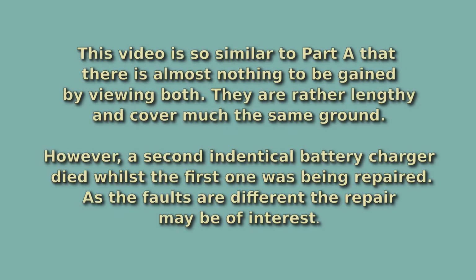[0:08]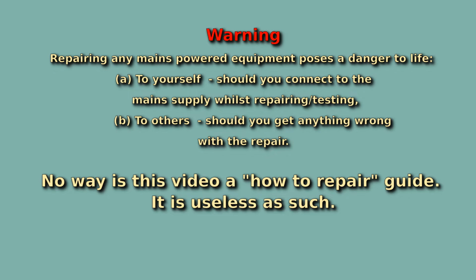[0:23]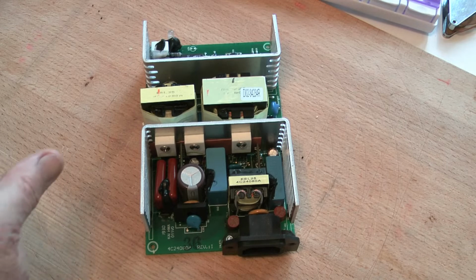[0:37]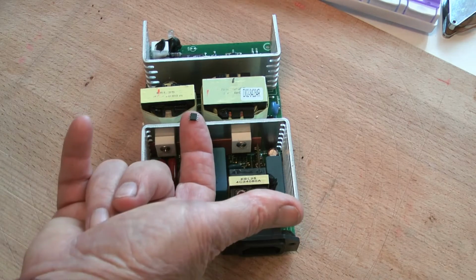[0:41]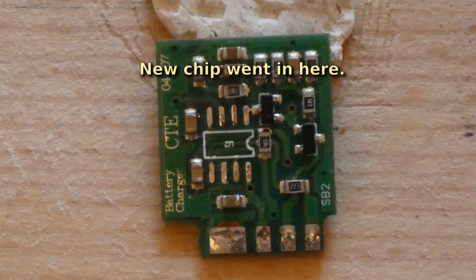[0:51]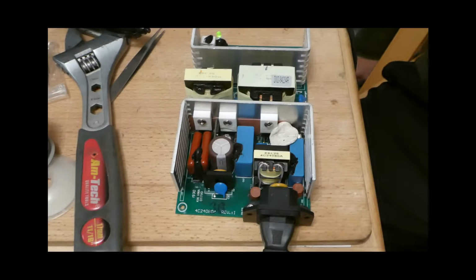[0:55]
Firstly, an apology, but, and there is a big but to all of this, when the chip came in, I couldn't resist it, couldn't wait, changed it out and removed it from the board, as you can see in this picture. Then I switched it on and tried it, and as you can see, the little green light flashed.
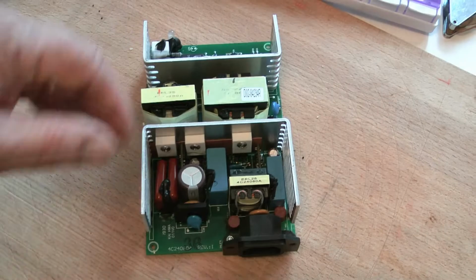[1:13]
And now my first thought was hurrah, fixed it, but the green light seemed to be flashing slightly faster than what I remember, although my memory is pretty vague on that side of the subject. Luckily, I've got another one.
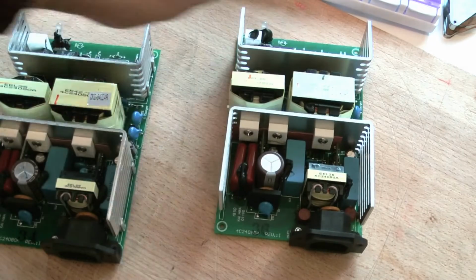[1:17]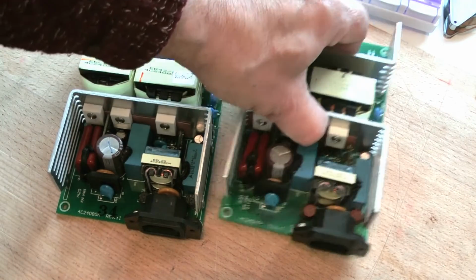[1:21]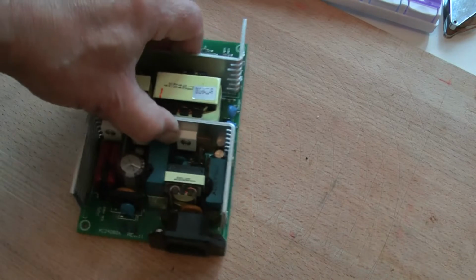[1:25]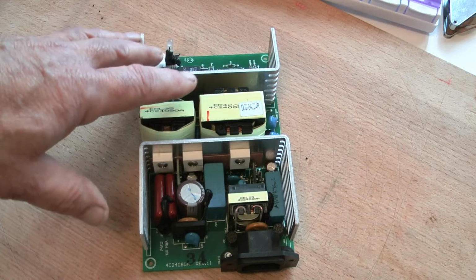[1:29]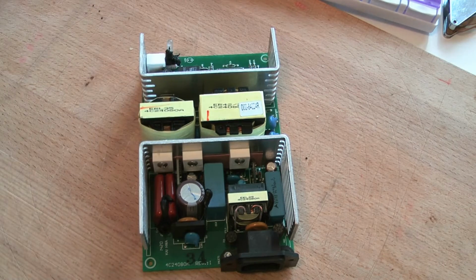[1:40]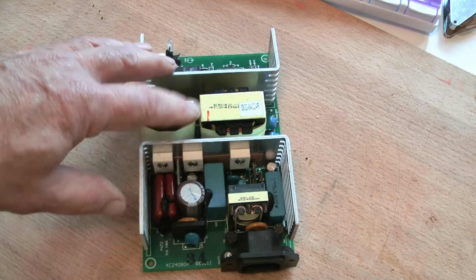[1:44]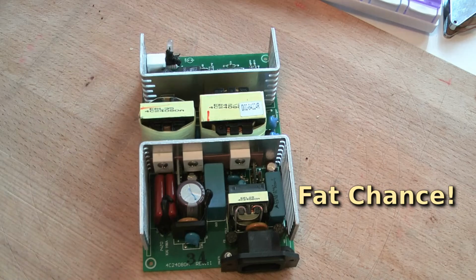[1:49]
Let's take away the one that's been repaired and talk about this one. I powered this unit up, the green light started flashing at the same rate as the other one. I thought, great, job over. Blinked my eye about 10 seconds later and the green light stopped flashing. We now have a fault on this power unit, and I'm going to take you through finding the fault on this one. I won't speak too much, I'll just get on with the job.
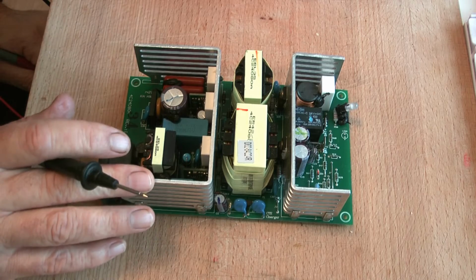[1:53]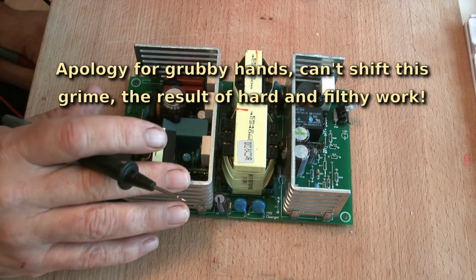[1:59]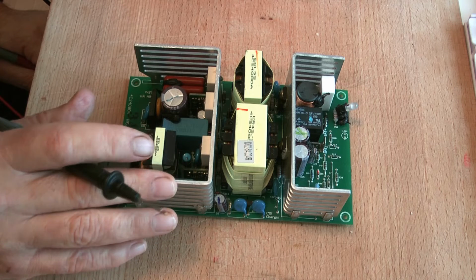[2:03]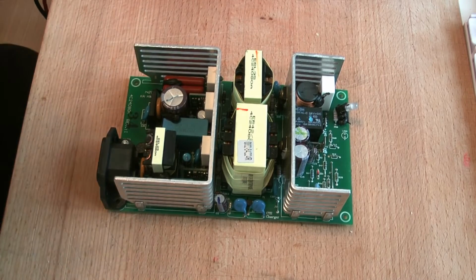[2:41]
I bought this unit second hand and it worked just fine, and primarily it's for our guest when she arrives, save her bringing her power charger with her for her electric wheelchair. And secondly, I bought it because it was a very reasonable price. And thirdly, I bought it because it allowed me to check out the component values for repairing the other power unit. And we also have a sort of third unit which she has at home. So she's got a main unit at home and a spare one in case anything goes wrong. And now we've got one here for when she visits.
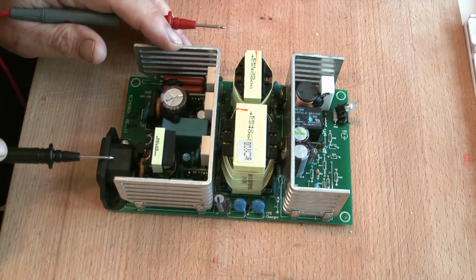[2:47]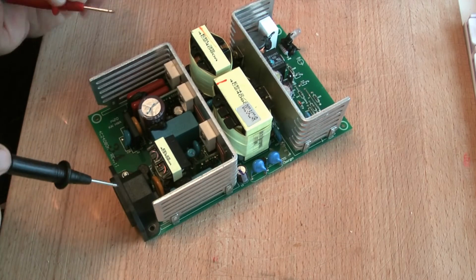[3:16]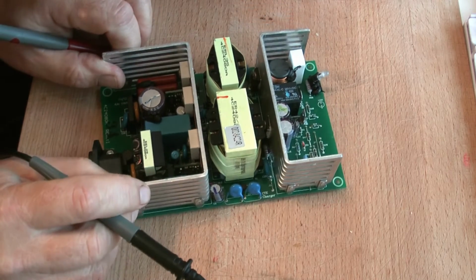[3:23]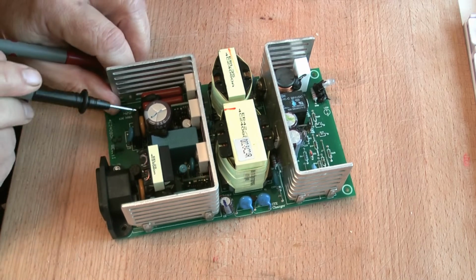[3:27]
Most power units break down into sort of the same format really. We've got mains input, either side of that we've got two fuses, one there, one there. There's a varistor there. A varistor is meant to take out high voltage spikes. There's the choke which goes either side, live and neutral. And before the choke though is normally a capacitor. This capacitor, you probably can't see it there. Let's turn it around so that you can see it. This capacitor here. And after the choke, it goes off to the bridge rectifier.
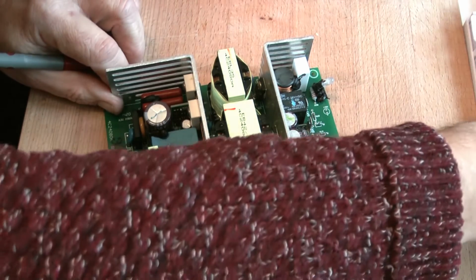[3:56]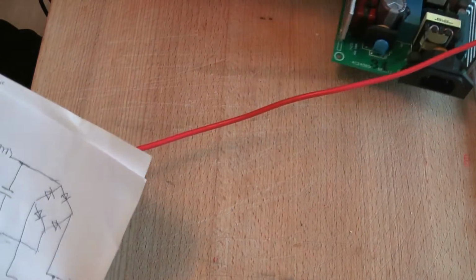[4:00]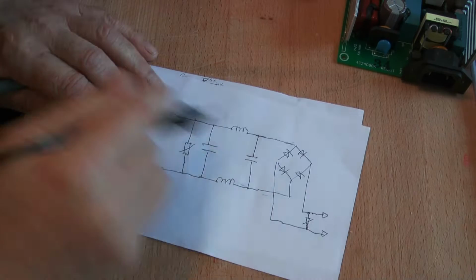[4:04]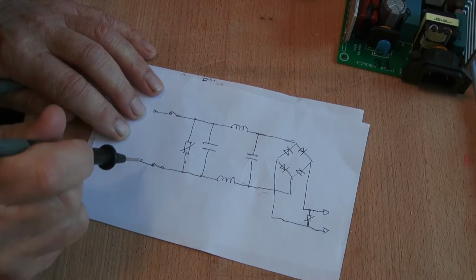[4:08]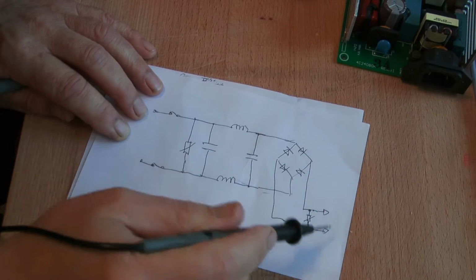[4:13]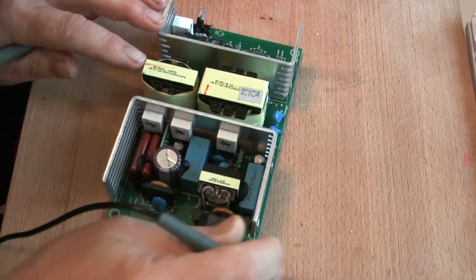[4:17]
And this bridge rectifier here, just in front of it, is a small ceramic capacitor, which I think is there to take out high frequency interference generated by the power unit. And behind that, on the rectified side, is another varistor stuck there. Now, let's see if we put the circuit in front of you. The circuit looks like this. To test this, all we need to do is just go to here or here and check here and here and see what we got. So without further ado, let's get on with it.
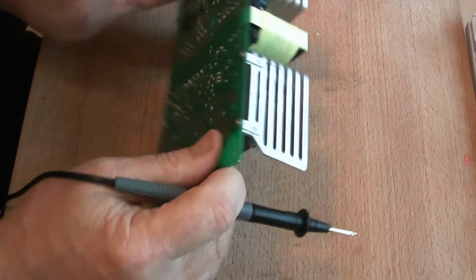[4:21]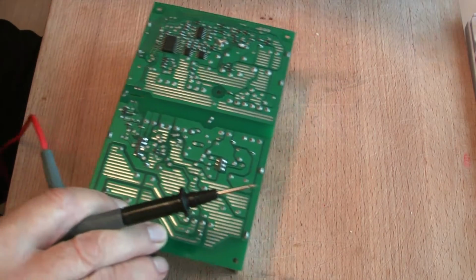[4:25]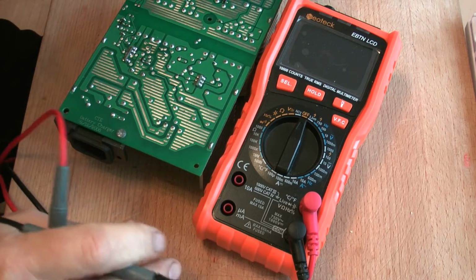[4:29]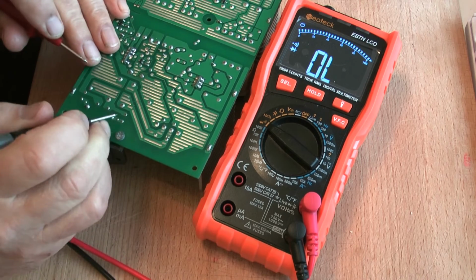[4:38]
I'll turn it over because it's easier for me. Switch my meter on if we can get it into a nice position. Diode mode. There's one side of the mains input, and over here are these two terminals of the bridge rectifier output, and on one of them it's open circuit, and the other one we have a diode drop. Now if I swap over to the other side, you should see that we've got the diode drop again, which indicates that all's well in that direction up to that point there.
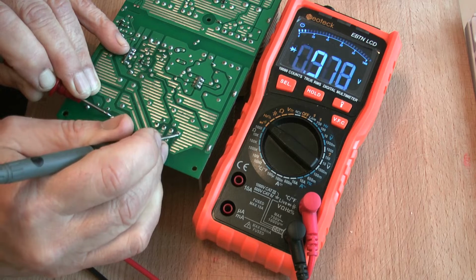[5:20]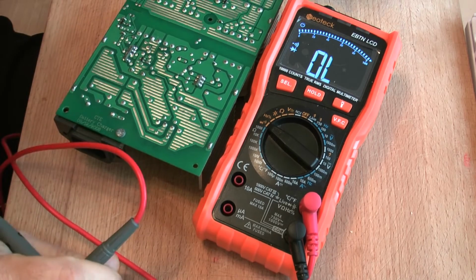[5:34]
Now swapping the polarity of our test probes over, I put plus on here, you will see that we now have an open circuit to that point there. Go over to the other terminal output of the bridge rectifier and get the voltage drop. Bring our test lead over to the other mains input and we get the voltage drop there. Nothing there. So basically speaking, we can forget about that bit of the circuit.
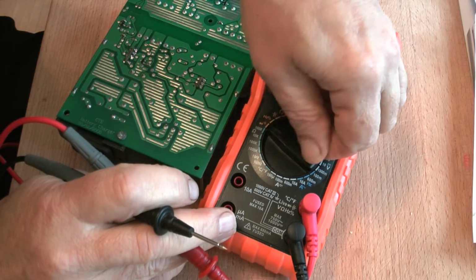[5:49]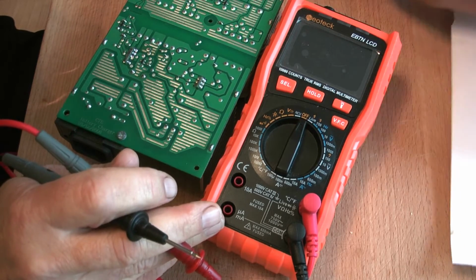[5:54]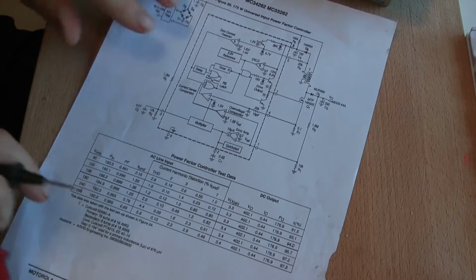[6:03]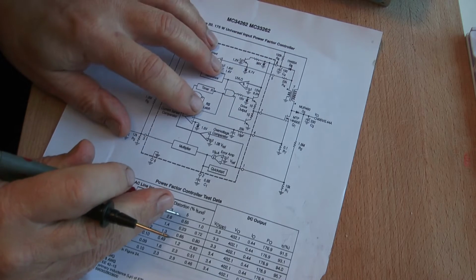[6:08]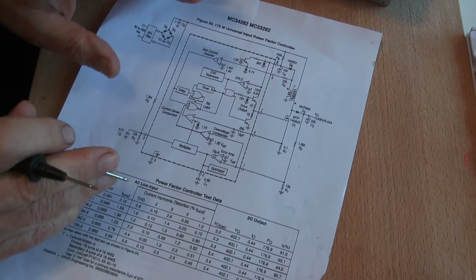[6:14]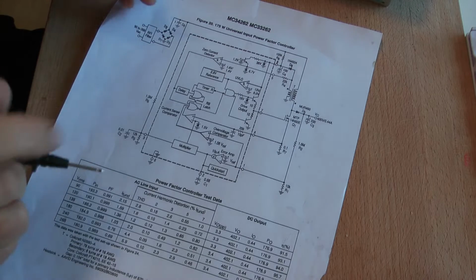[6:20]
Now, from here on it becomes difficult because we don't have a circuit diagram, but we do have a recommended circuit diagram I came across for the chip that I replaced in the other unit. And although this is a very simplified circuit, there are a few major points in here that are very similar to what we find on our power unit that's blown.
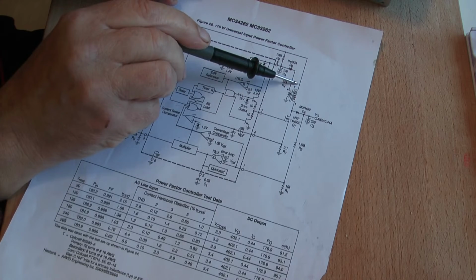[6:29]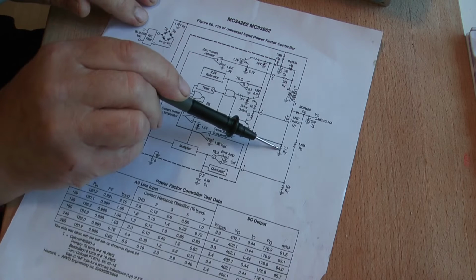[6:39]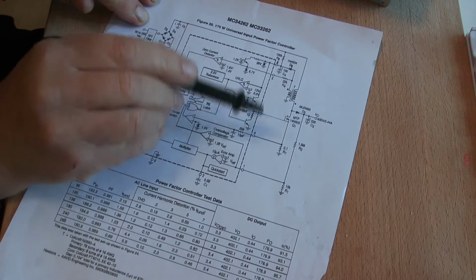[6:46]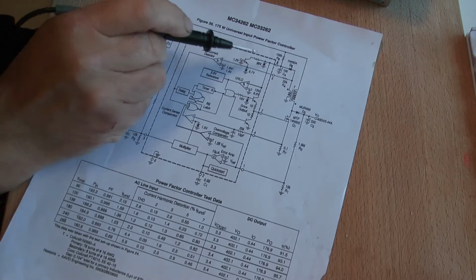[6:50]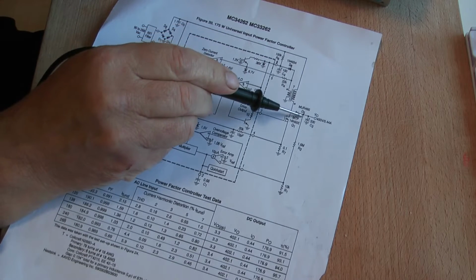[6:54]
And as you see, we've got this RF filter bridge rectifier circuit here, and it runs off to a transformer and a switching transistor, which is a MOSFET, and a 0.1 ohm current sensing resistor. Now, these three components are common on our power unit. And also this diode that runs off from where they take the power out. In fact, the diode's common, and the electrolytic capacitor performs a similar sort of configuration.
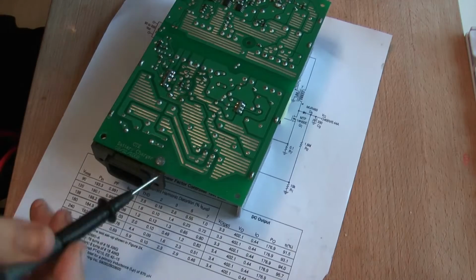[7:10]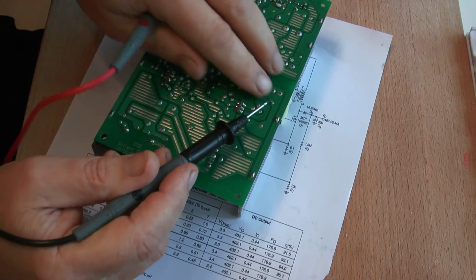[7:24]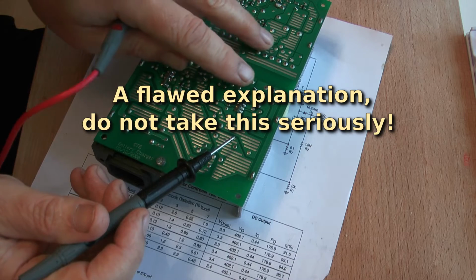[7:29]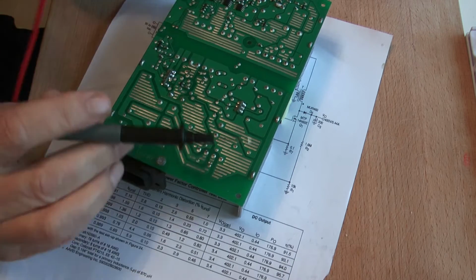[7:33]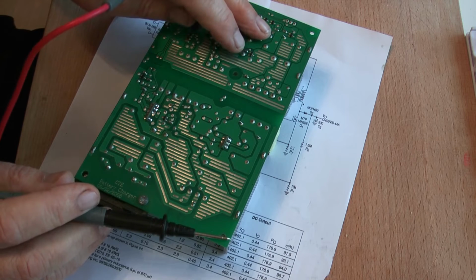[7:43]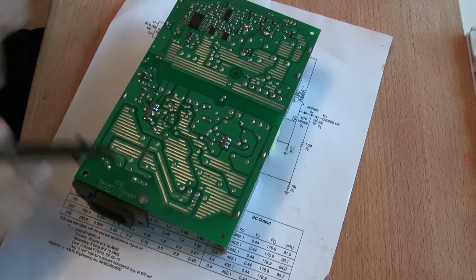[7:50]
Well, firstly, this is the transformer that we were talking about, across here, and this is where all the main power goes to the outputs that charge the battery. There is another transformer over this side, and this is used to derive the low voltages required to drive all the logic function, the integrated circuits here. So there's two functions. One's providing the 24 volts to the output, and the other one is providing the necessary voltages to drive these chips and transistors that decide upon which charging rate we're going to have.
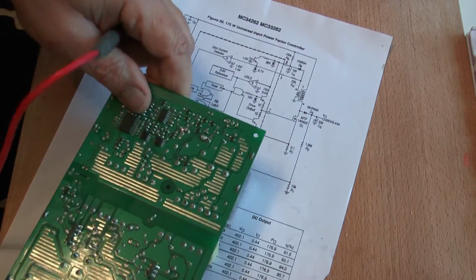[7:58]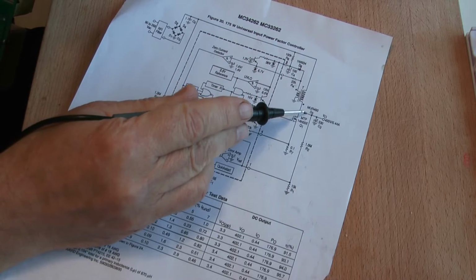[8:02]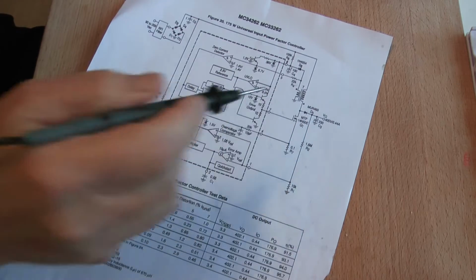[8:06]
So basically the circuit breaks up at this component here. So it's a good point to actually test across.
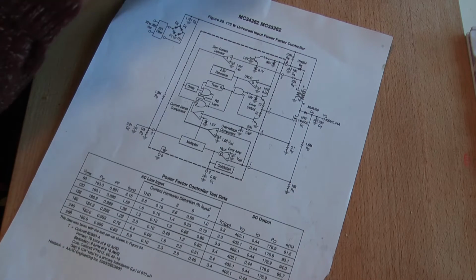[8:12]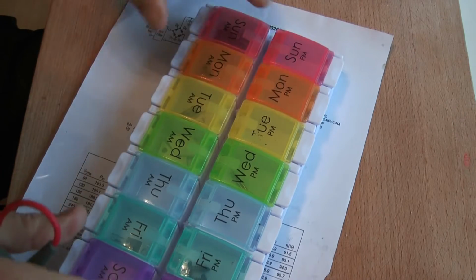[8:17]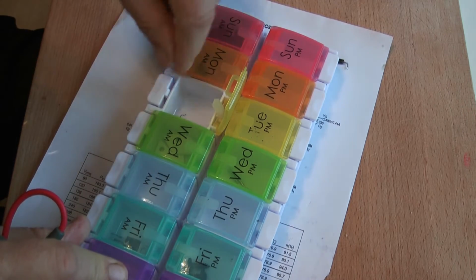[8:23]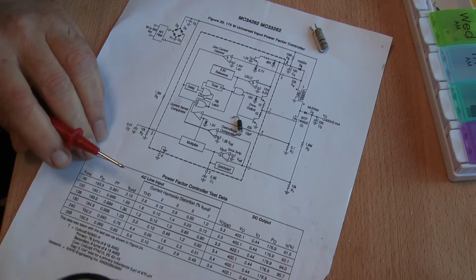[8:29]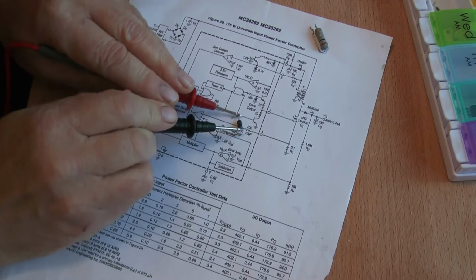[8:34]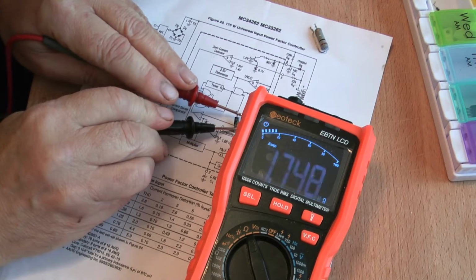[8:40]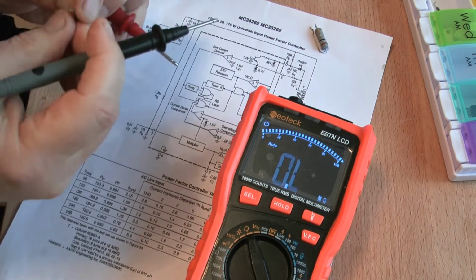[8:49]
Now, when we repaired the other unit, we had the, let's see if I can find a diode. I'll take these components out, some of them, not all of them, just these. This is the diode, and that was blown. Let me show you, put it on a resistance value. Let's see if we can see what's what. So it's 0.2 of an ohm. Not very much, is it? Or 0.1. And it's like a lump of wire.
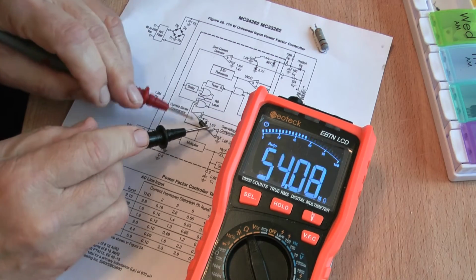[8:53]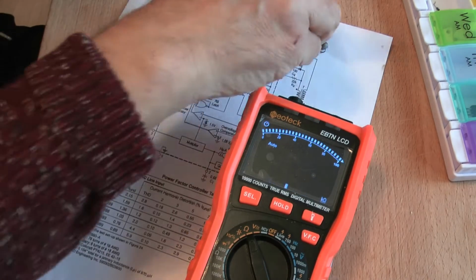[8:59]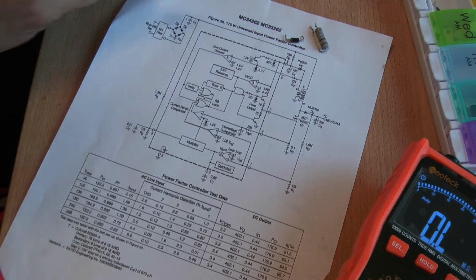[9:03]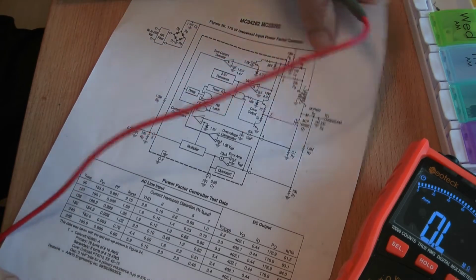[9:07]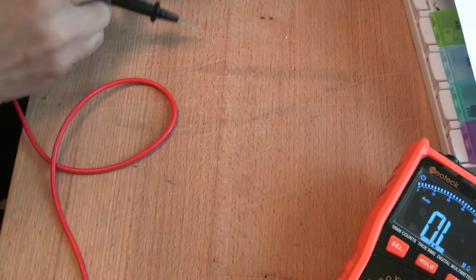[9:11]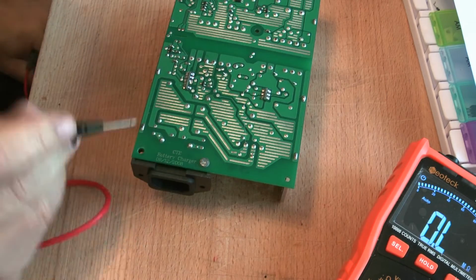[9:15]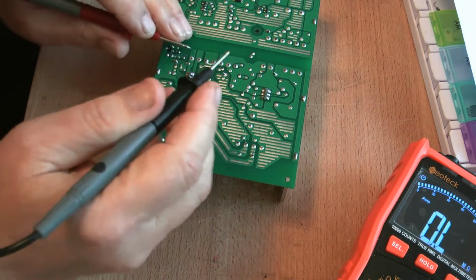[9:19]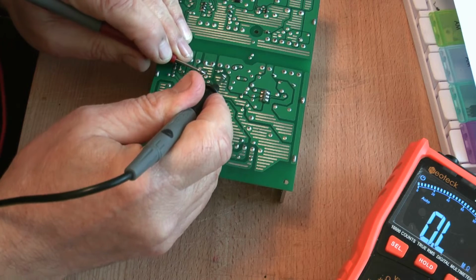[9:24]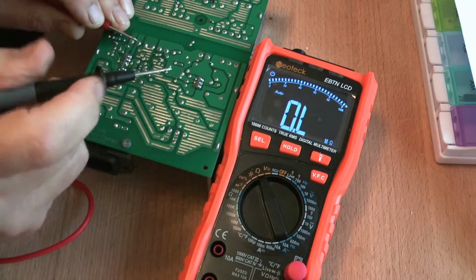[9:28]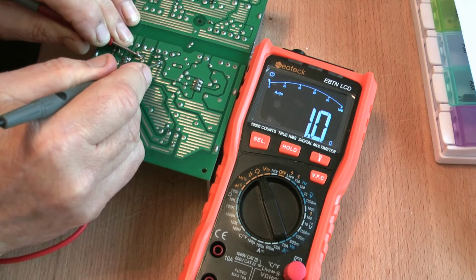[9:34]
Right, let's see. Both sides. Yeah. Right. So, in my opinion, a good starting point is going to be to have a look at that diode and see whether that diode is still functioning. And from experience of replacing it on the other unit, I know exactly where it is, and it's exactly these little leads here and here. Let's bring the meter in so you can see what's going on. Here and here. And lo and behold, it's 1 ohm. Now that doesn't bode well for anything.
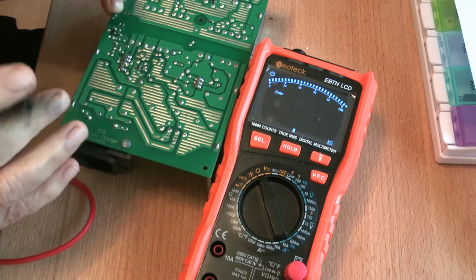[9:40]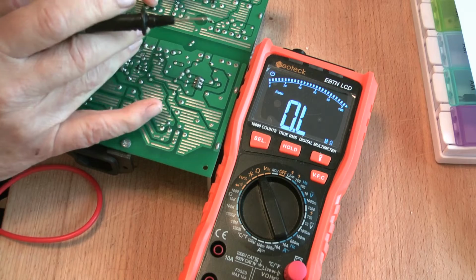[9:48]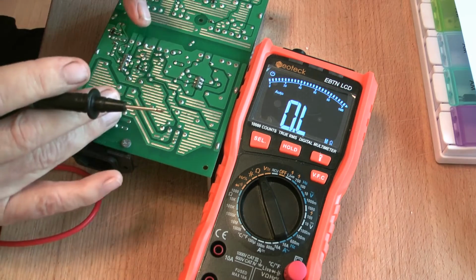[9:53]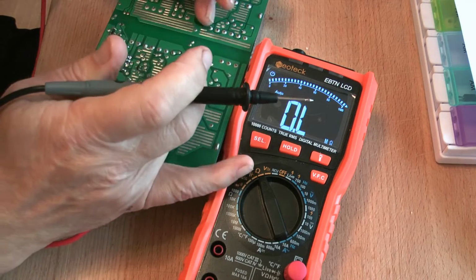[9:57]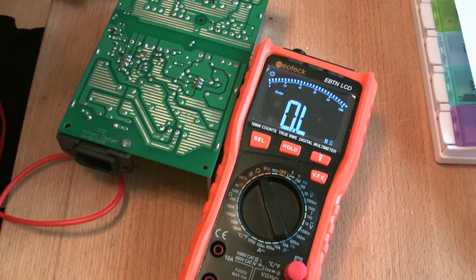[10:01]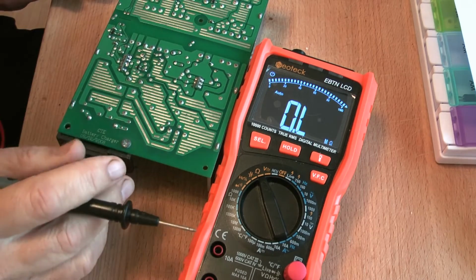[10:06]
And I think this is an excellent point to actually break the circuit into two halves. So all the circuitry for this transformer is on this side of the diode, all the circuitry for that transformer is on that side of the diode, and we need to take this diode out.
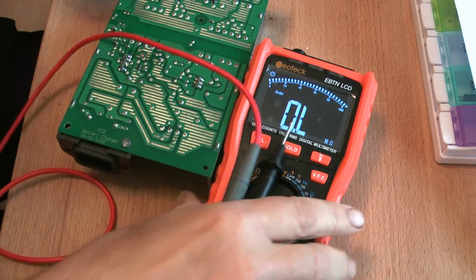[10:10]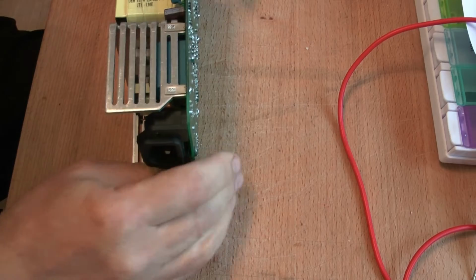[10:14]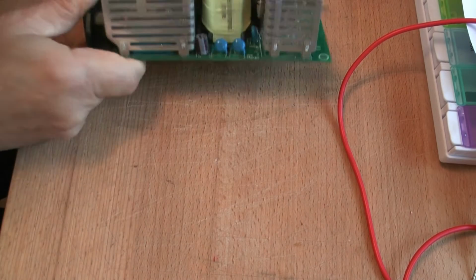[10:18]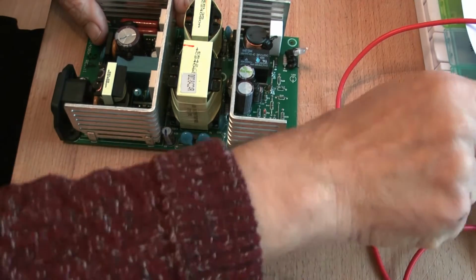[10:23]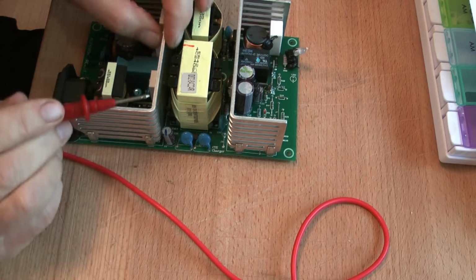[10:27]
Now here comes the hard part, and it's what makes this job difficult. The diode itself, get in the camera, well, you can't see it, and you won't be able to see it because of the thickness of this heatsink. It actually sits directly underneath this heatsink on the board down here, and we need to remove the 3 transistors here and the heatsink to get access to that diode. What a bind. But it does have its plus side, and it means that we can test these 3 transistors when we're done.
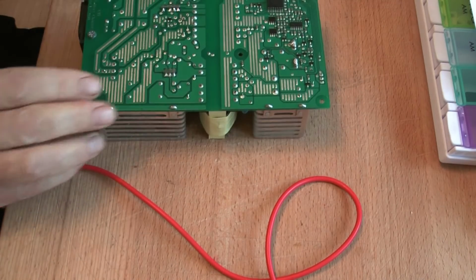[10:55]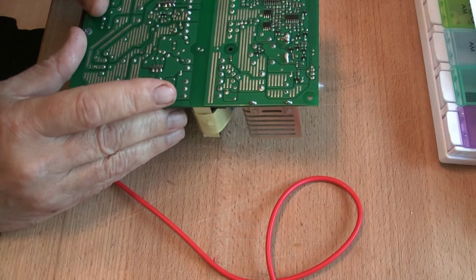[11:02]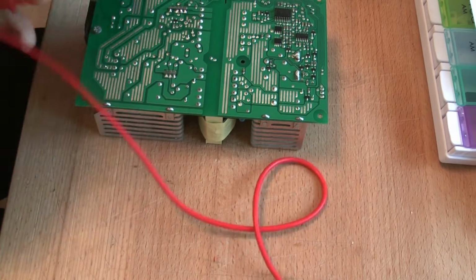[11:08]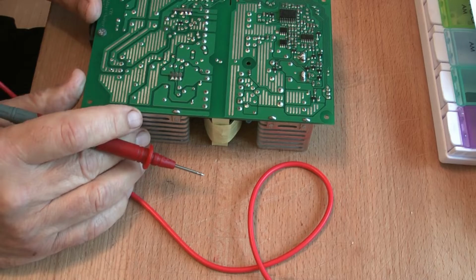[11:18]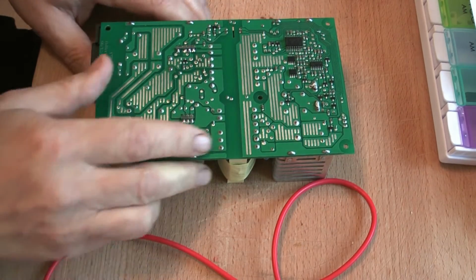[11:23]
So we've got to remove the heatsink and desolder these transistors, which are those 3 there. We've got to desolder them from the board and make sure the leads are decoupled from the board so that we can get on with our repair. Hope that's clear. I'll shut up for a jiff while I set myself up to get on working.
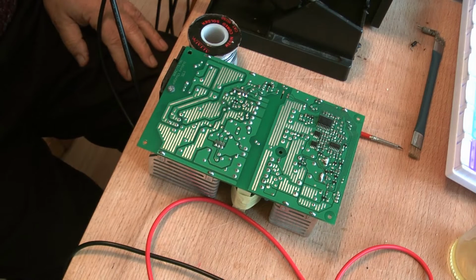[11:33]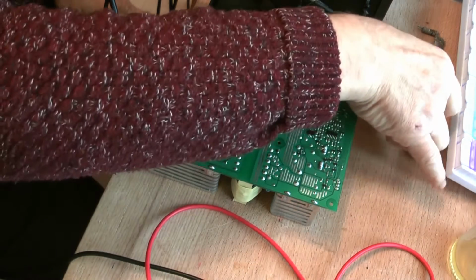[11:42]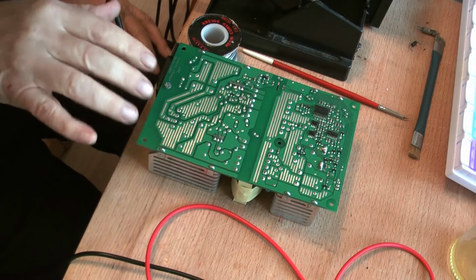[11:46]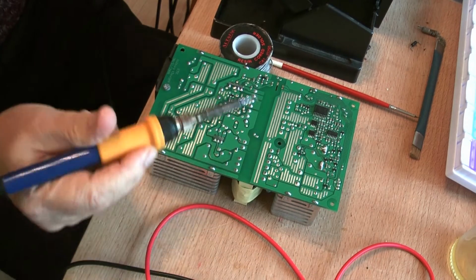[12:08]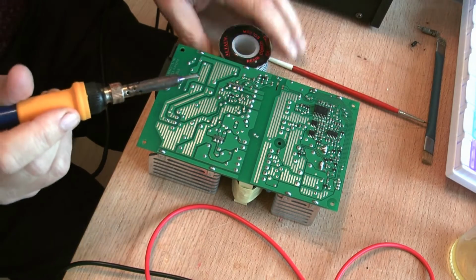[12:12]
Now from here on, guys, it's going to get a bit hectic, and life is quite difficult because they use lead-free solder, and we need to try and get the temperatures down on some of the points before we desolder them. And to do that, we're going to use leaded solder, which is the normal trick. And one of the tips I would say before you do anything like this, before you start melting your leaded solder onto the blob, is to see if you can get it molten first. And if you can't, as I can't here,
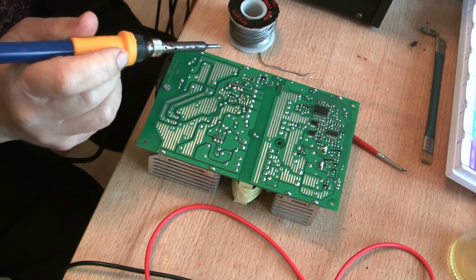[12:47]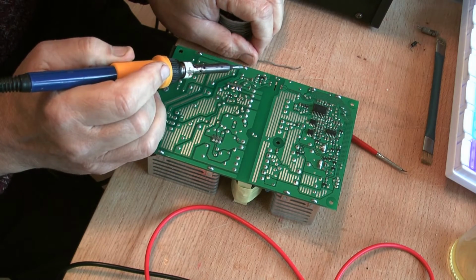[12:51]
my solder tip is not hot enough to melt that. And currently I'm sitting at 230 degrees. I'm going to take it up to about 250, 260, yeah, 260. The problem is that as soon as you touch a cold surface, the heat is conducted away from the tip of your iron, and it's a question of whether your iron can supply enough heat to replace it and raise the temperature up. So basically heat is being conducted away faster than it's getting to the tip, and that's why I've had to increase the temperature. We'll try again and see what happens.
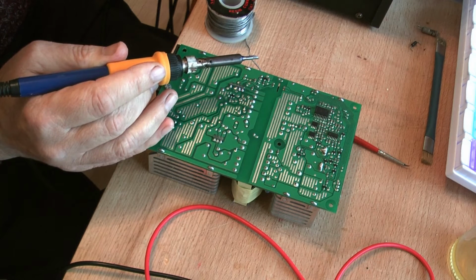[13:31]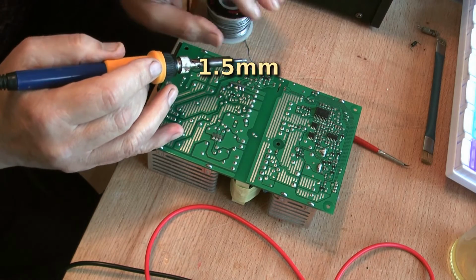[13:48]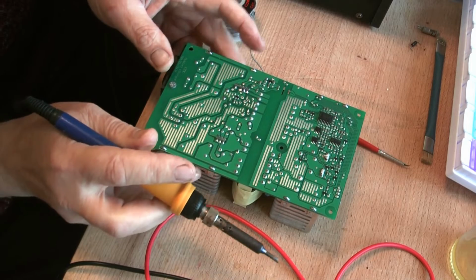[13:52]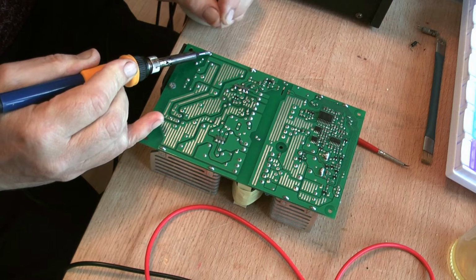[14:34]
And you see what I mean? It's taking time for the chip to heat up again, and we should be in business. And heat's getting through. Give it a little time. Now add our solder, and that should work.
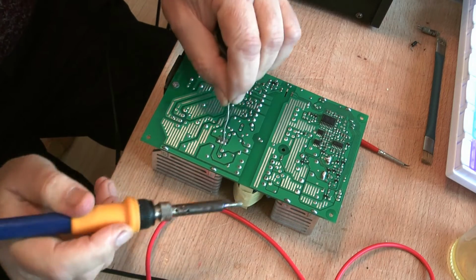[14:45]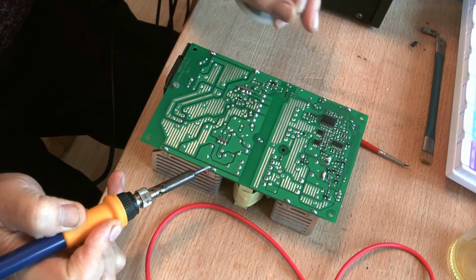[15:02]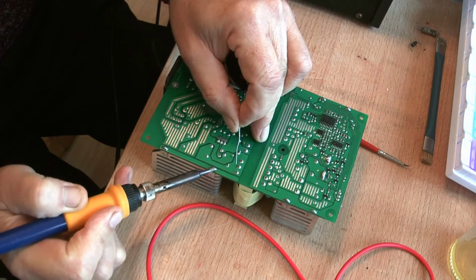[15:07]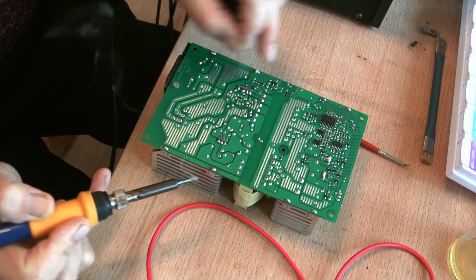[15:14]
It's not going to drop the temperature right down to the same temperature as this melts out, because the eutectic won't be a perfect one for that application, but it'll drop it below. Roughly, with ours here it's 220, and we're going to drop the temperature down a little bit. Anything helps. Now right, here we go again. Add our solder. Keep going. Now, that's a lot of solder there.
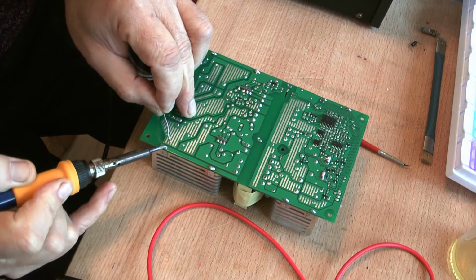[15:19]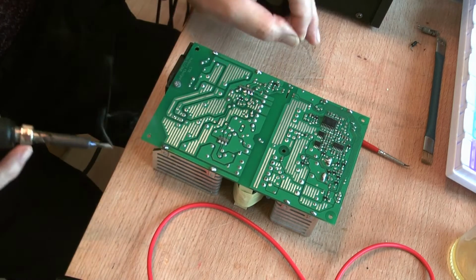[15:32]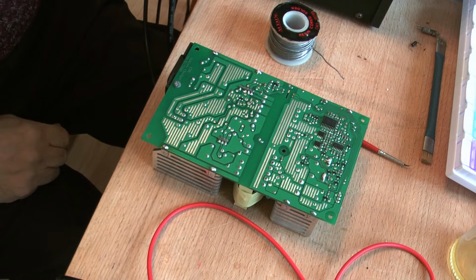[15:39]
And well, do the same with this one. It's molten. Add our solder. It gets all the way through. Right, now I'm going to keep it there. Now I'm going to use some solder wick to get rid of most of the solder if I can. Seems a bit sort of daft, but that's the way I'm going.
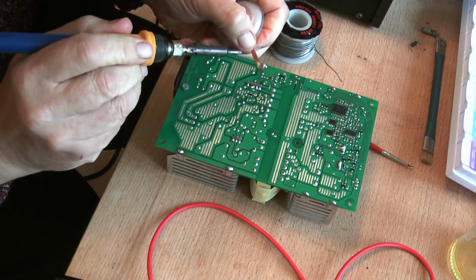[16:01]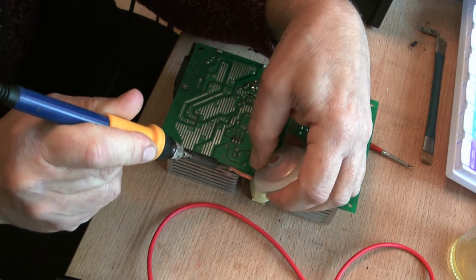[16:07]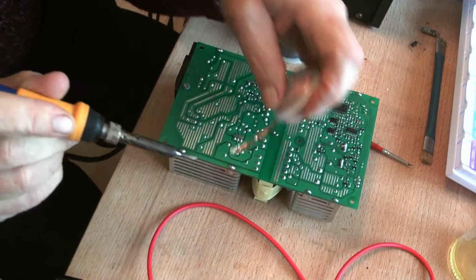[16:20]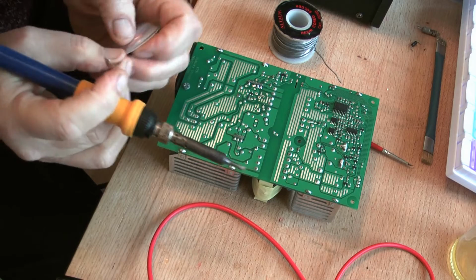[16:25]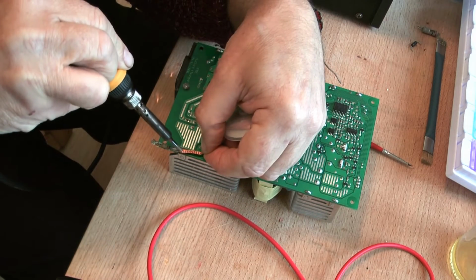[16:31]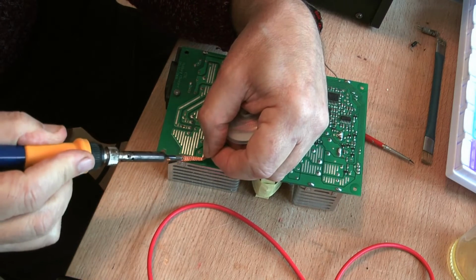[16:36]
Right, let's go. Let's see how much of this we can get out. I'll do this one first. Let's see what we've got. Not getting very far, are we? And you've got to allow yourself plenty of time and don't be a butcher at it if you can avoid it, because you want it to all go back nicely eventually.
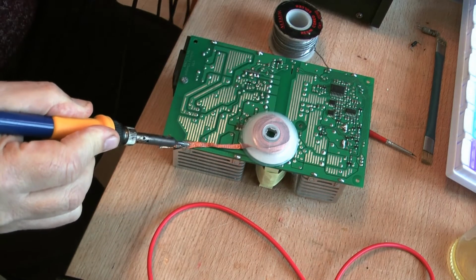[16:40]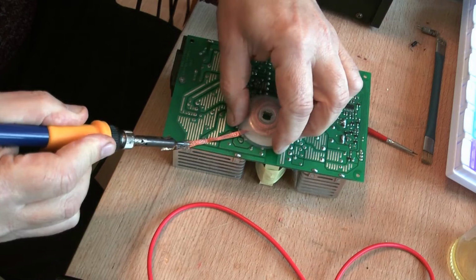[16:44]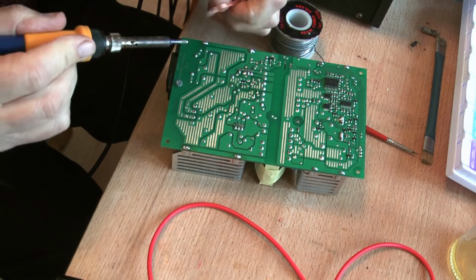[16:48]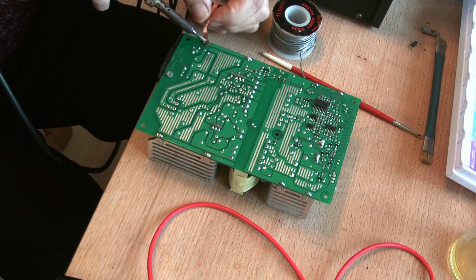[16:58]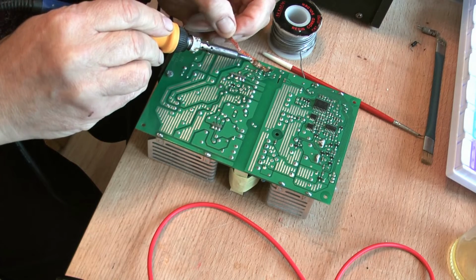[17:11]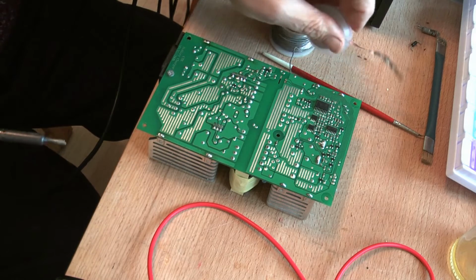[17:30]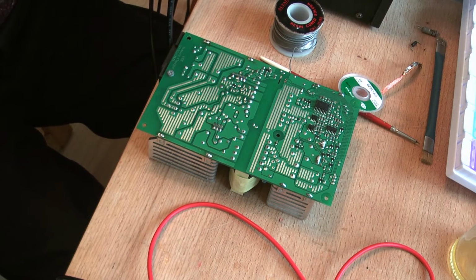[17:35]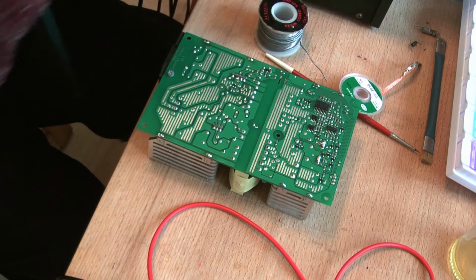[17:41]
Yeah, better check that one out. It's difficult, isn't it? And this is because these little lugs are a funny shape. They're oblong shape, and it makes getting the solder away difficult. Let's see that now. Okay. Now, I've got to settle for that. I'm going to add a little bit more solder again, which seems a little... No, I won't. No, perhaps I will, perhaps I won't.
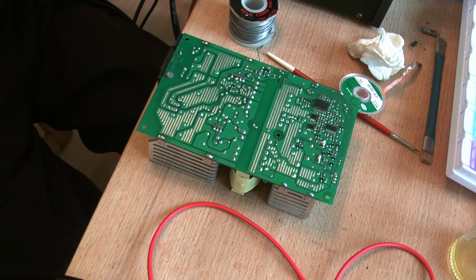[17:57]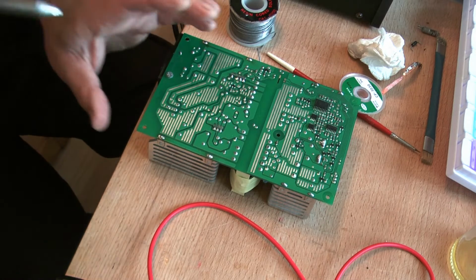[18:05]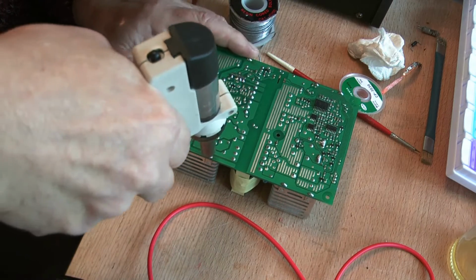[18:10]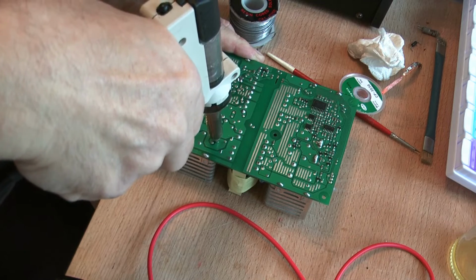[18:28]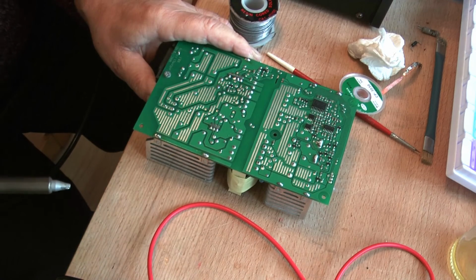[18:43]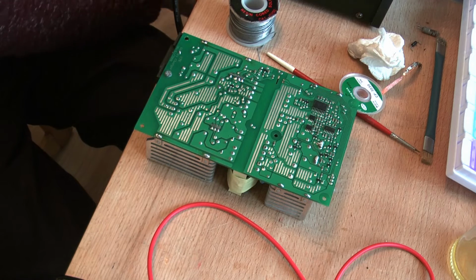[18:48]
I'll have to switch on another tool now, which makes a noise. And the object of the next tool I'm using is just a solder sucker to get rid of a bit more of the solder. I'm going to try the lugs to start with and see whether I'll get anywhere. Not even touching it. Let's see about these. Not even getting close. Barely. Barely. Right, we'll let that fester.
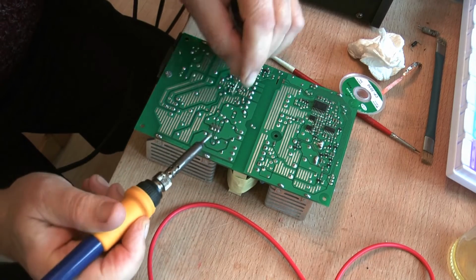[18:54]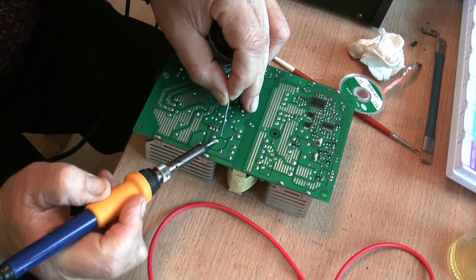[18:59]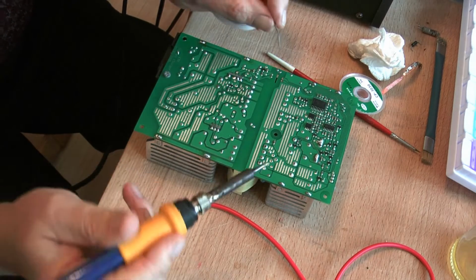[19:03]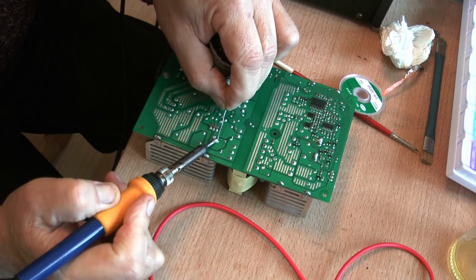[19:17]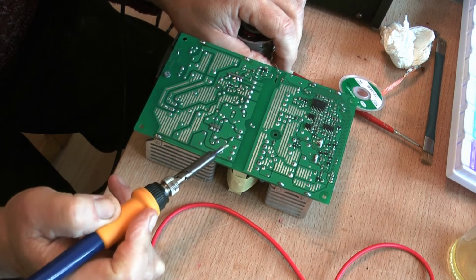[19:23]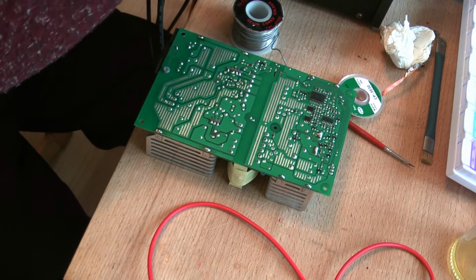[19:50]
Not easy. And this is why we have to try to decrease the temperature of the... Now that's gone to sleep. Wait for this to warm up now. There. No, I put that on there too early. Try that one. Patience is a virtue, but with this, honestly, it does test one's patience.
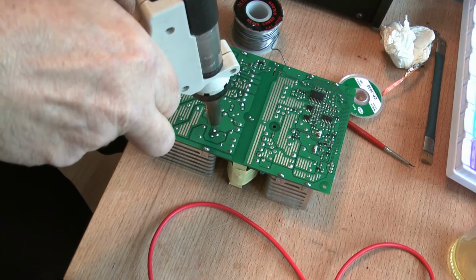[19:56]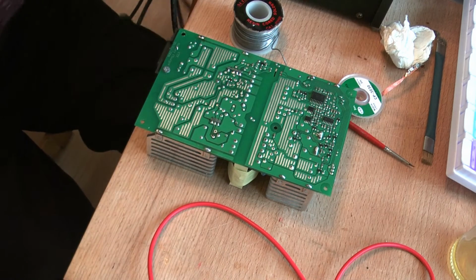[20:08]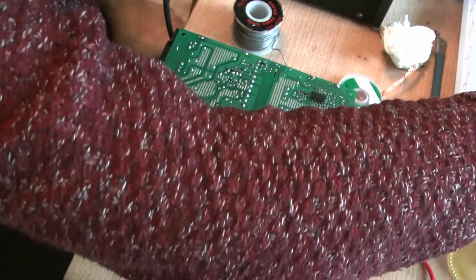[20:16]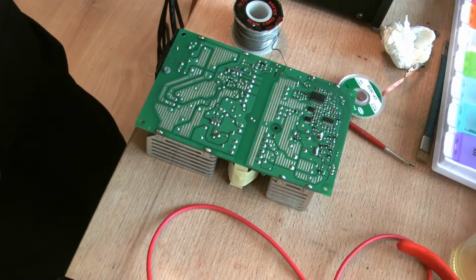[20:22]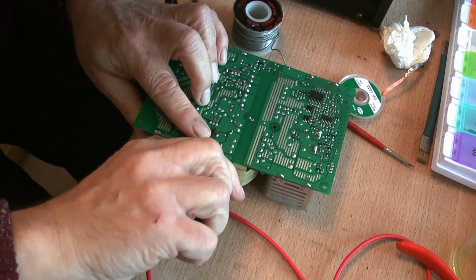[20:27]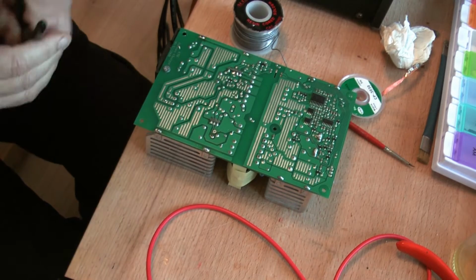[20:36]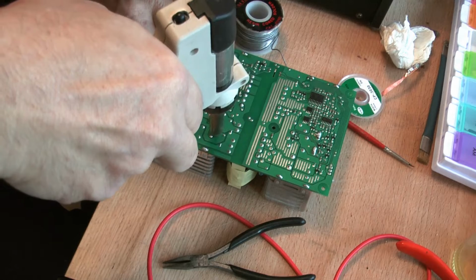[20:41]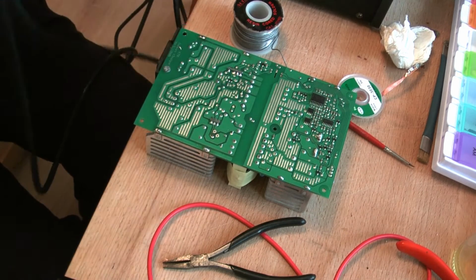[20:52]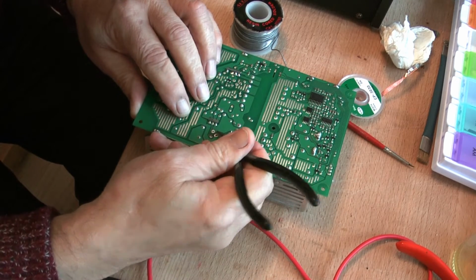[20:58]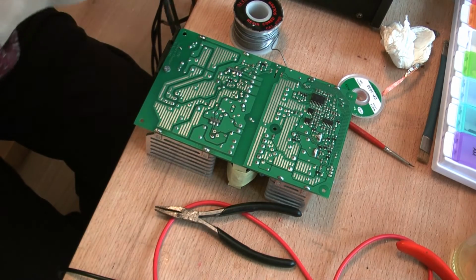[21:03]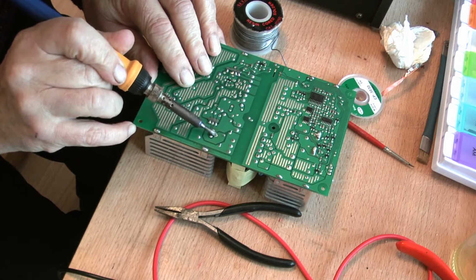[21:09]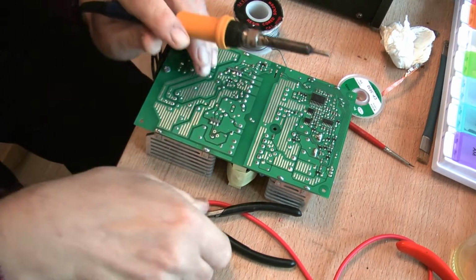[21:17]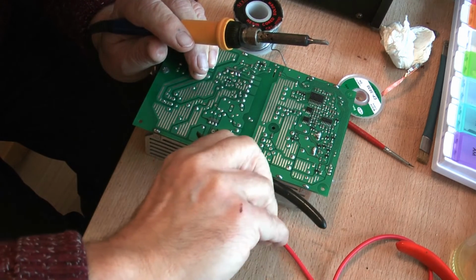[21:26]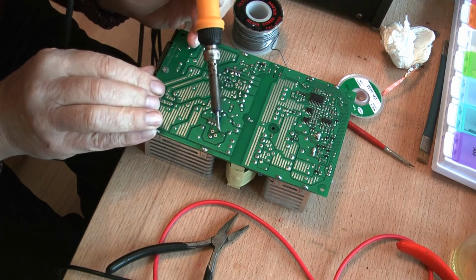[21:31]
And as you can see, that little lead has got to come away a bit. I need a tool to try and break the bond. Let's see. Yep, that lead's free. Yeah, free. I've just got to try and get the others like that. Let's see if that one's free or not. Now it's really stuck in. It's still stuck. See if we can get that moving.
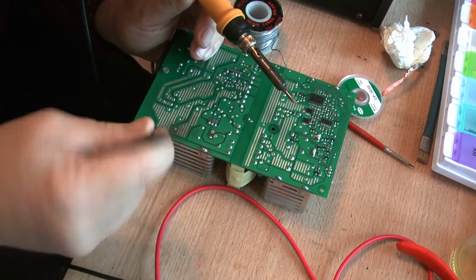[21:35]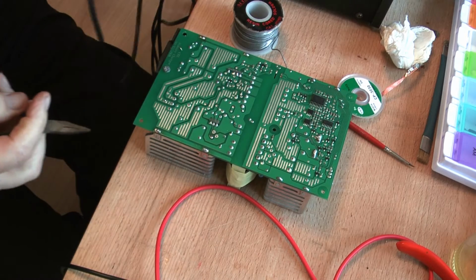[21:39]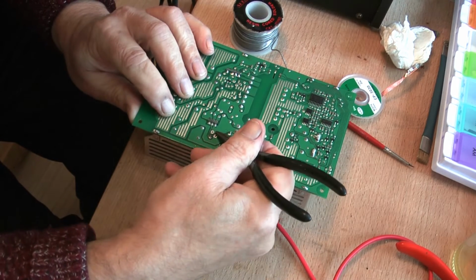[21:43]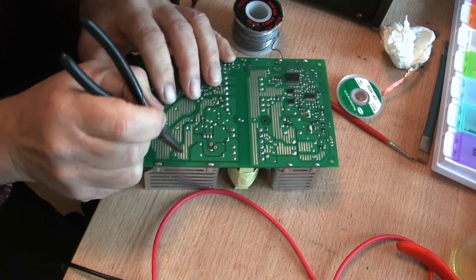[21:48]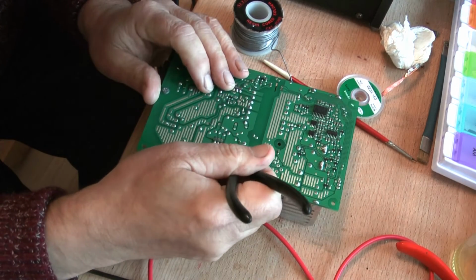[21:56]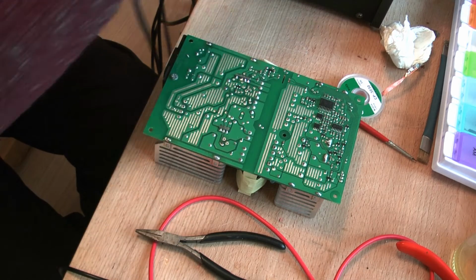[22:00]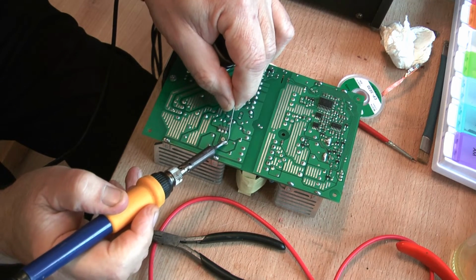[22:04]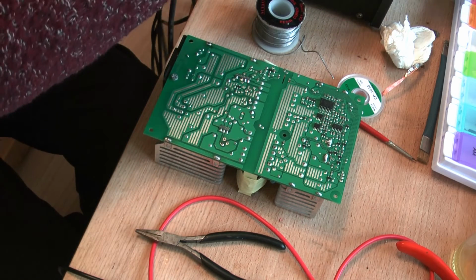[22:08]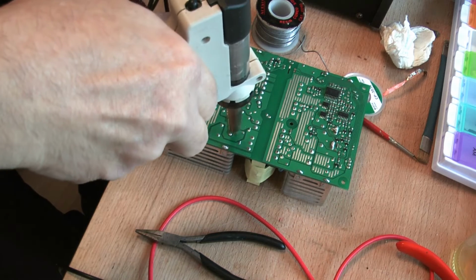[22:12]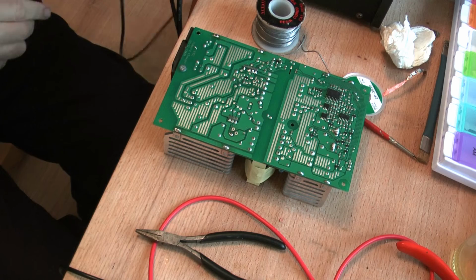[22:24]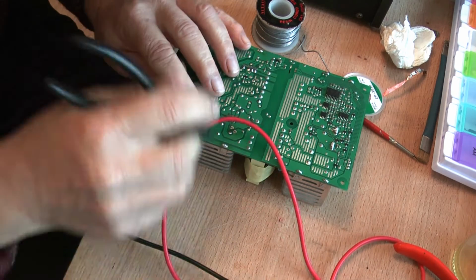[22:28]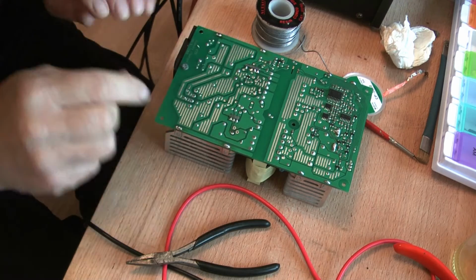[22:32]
Sometimes it just requires a little bit of help. And you hope it doesn't seal again. This one looks like it's stuck again. Nothing for it but to put a little bit more solder on. Get our solder, have another go. Well, hopefully you can see that. Yeah, that one looks good. Now for the next one.
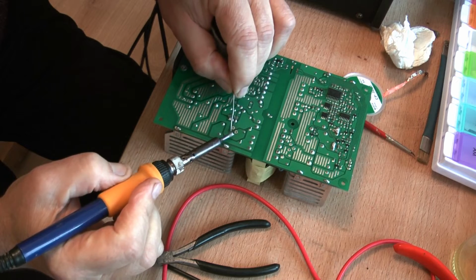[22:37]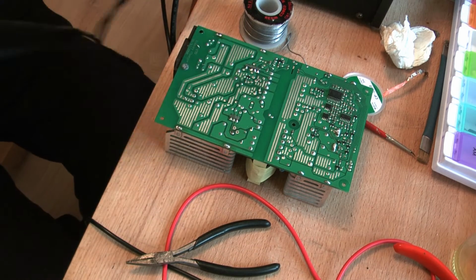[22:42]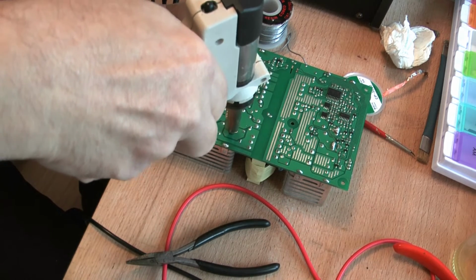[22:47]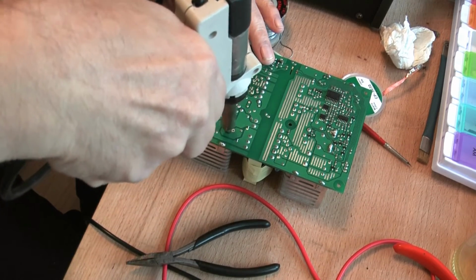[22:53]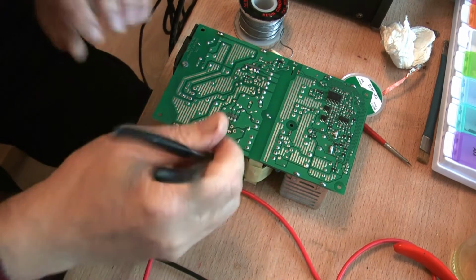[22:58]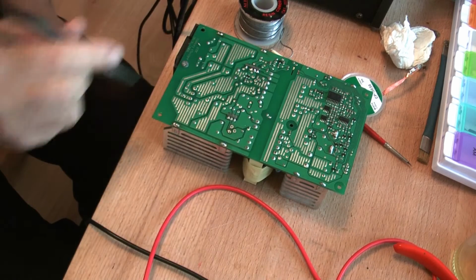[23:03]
I think we'll put a lot more solder on it. Come up here. Here we go. I'll feel if it's loose. And we'll see if that's loose. Now we repeat this process on the other three and on the other two, and I'm going to stop it here because it's just wasting video.
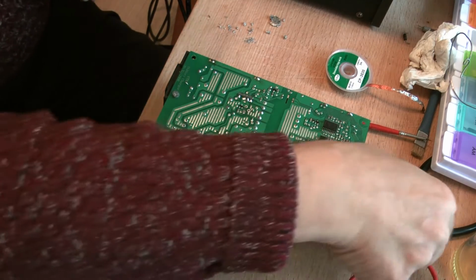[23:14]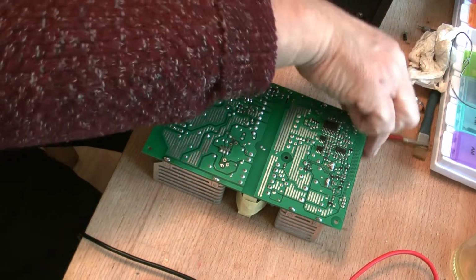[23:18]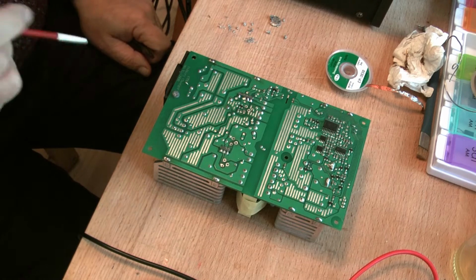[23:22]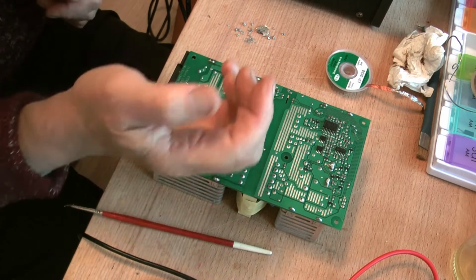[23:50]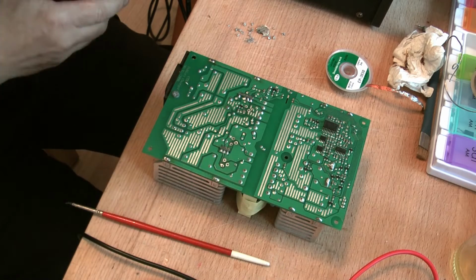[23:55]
Now I'm back, and that was a little bit more traumatic than I was hoping for, and it's never an easy job. One, my solder sucker got stuck, and as you can see some of the bits and pieces that came out of it, so I had to unblock that. Although a solder sucker works extremely well, it does get blocked quite easily, and the time it saves you over some other techniques is offset against the time you spend unblocking it, and horses for courses. But I prefer it much to the pump thing that you just go plop with. They're useless. I haven't got one in my toolbox.
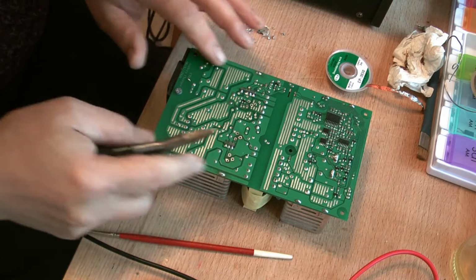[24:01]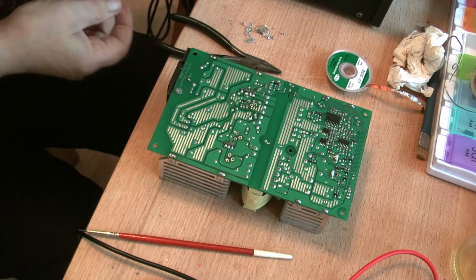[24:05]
And now I've got to get these lugs unsoldered. Now, I don't know whether it's possible to get my iron, this tool, over these lugs. Let's see.
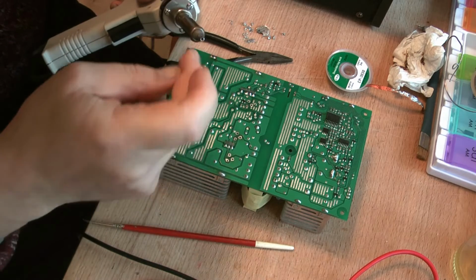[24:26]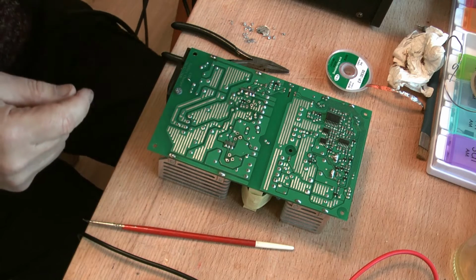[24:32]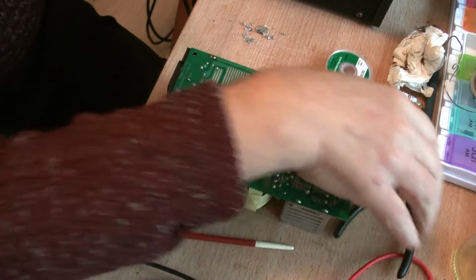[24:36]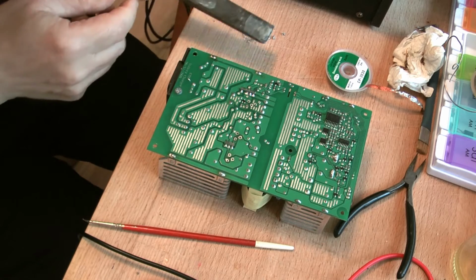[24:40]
No, they're not going to go over them, which is unfortunate. In a future time I'm going to remedy that by making my own tip and make a slot in it as opposed to sort of a circular hole so that it can get over lugs, because that would help an awful lot then. So I have to resort to another technique, and I've got a broad instrument here.
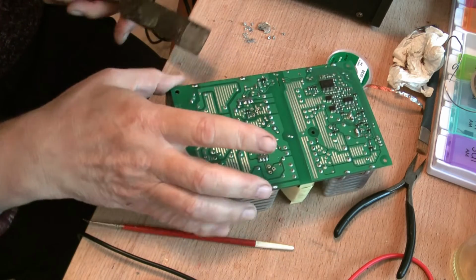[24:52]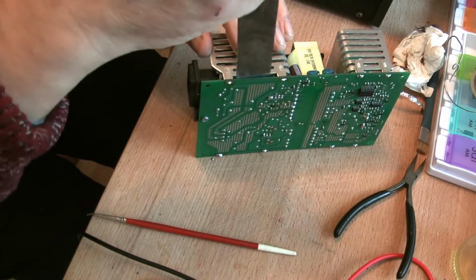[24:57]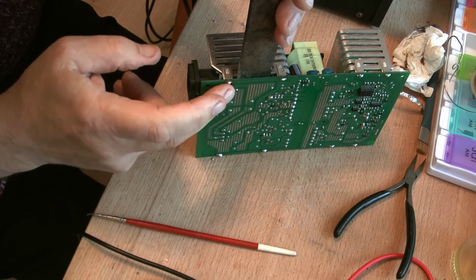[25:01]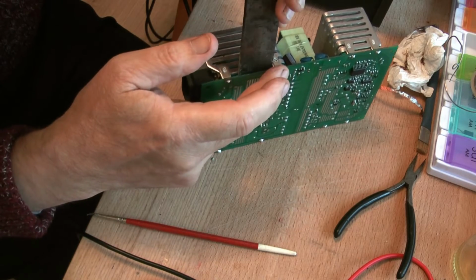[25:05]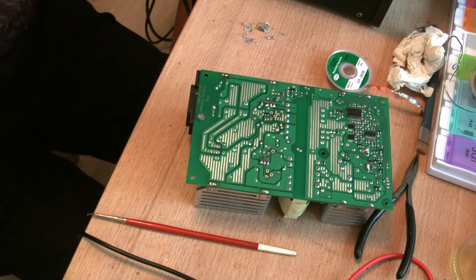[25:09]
It's a chisel. It's fairly blunt, and if you're worried about it I would put a piece of tape over it to stop it from doing any damage on the inside. I'm going to put that in there and heat the lugs, and then once the solder's molten, just twist, go up to this one, do it. Just watch me, hopefully it'll work quite neatly.
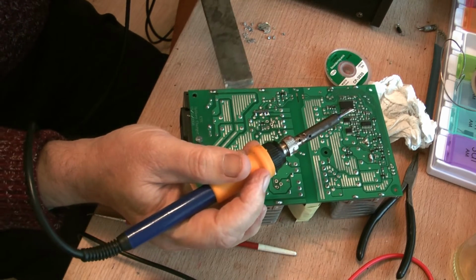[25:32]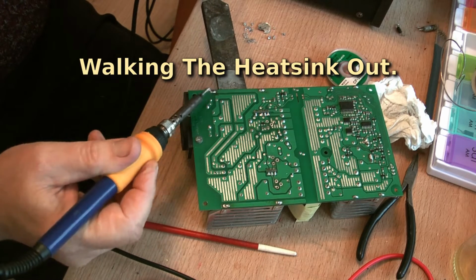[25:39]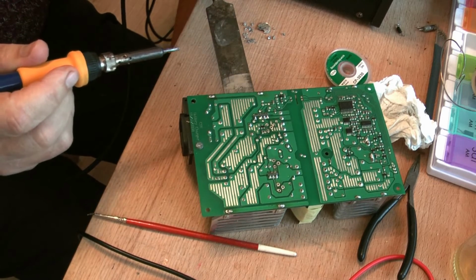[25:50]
Temperature of the soldering iron up again and running. Yeah, good. Okay, not yet. Nice and warm. Gently put this in, I don't want to stab anything inside, and you'll see. Right, warmed it up a little bit, waiting for it to cool off. Warm it up a little bit, wait for it to cool off.
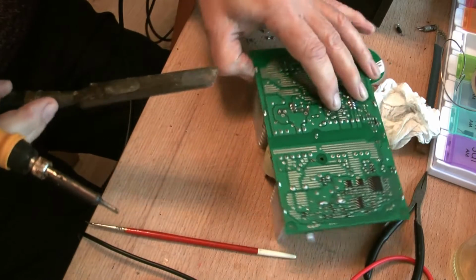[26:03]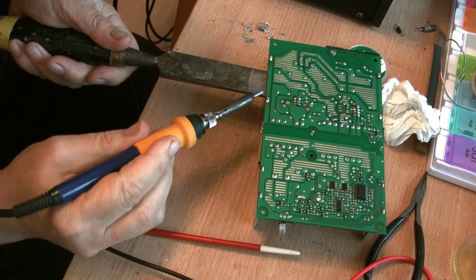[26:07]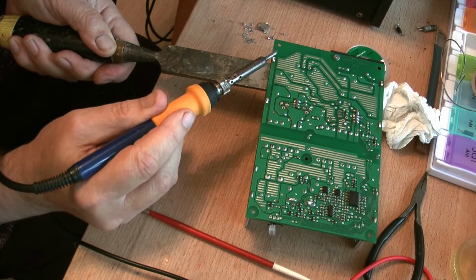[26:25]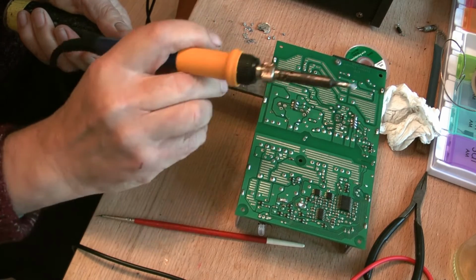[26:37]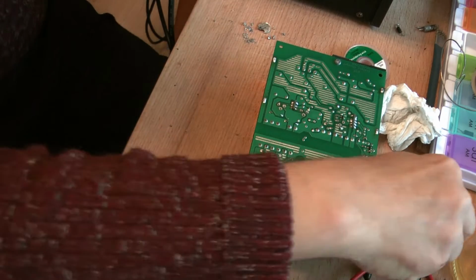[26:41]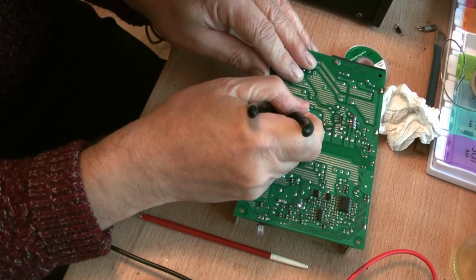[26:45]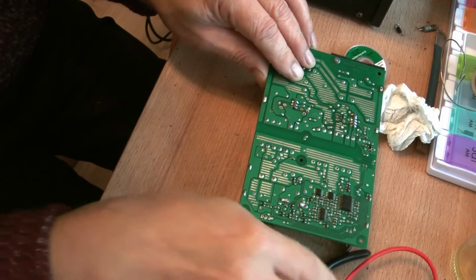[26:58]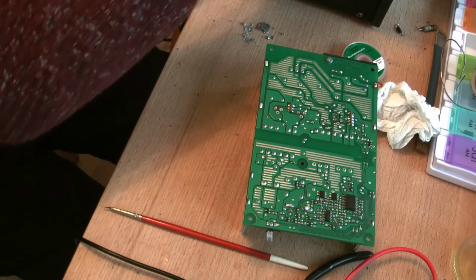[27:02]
Wait. Not working too well. Try the other one. Wait for it to cool off. Come back to this one. Twist. Now it may be that the components of that transistor are holding it in, and we'll check to see whether they're free or not. If they're not free, that's what our problem is. Yeah, they're all free, so not too sure what the problem is. Have another go.
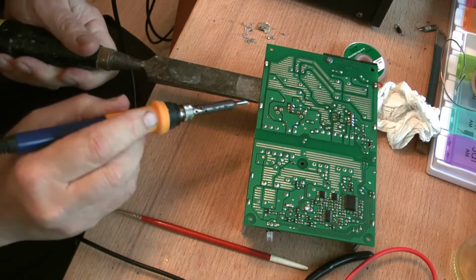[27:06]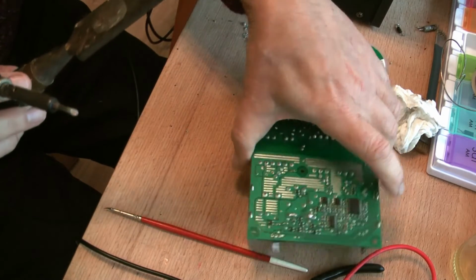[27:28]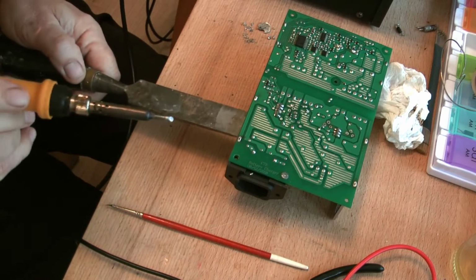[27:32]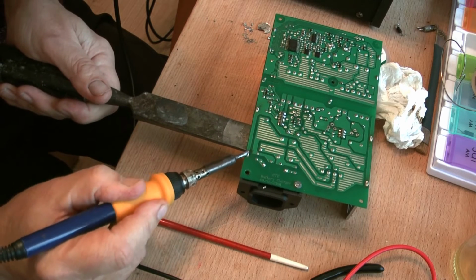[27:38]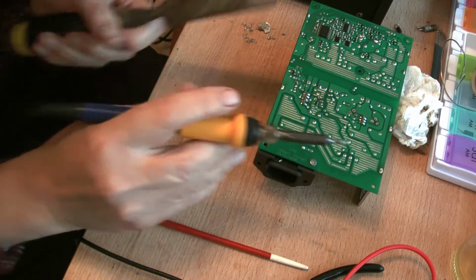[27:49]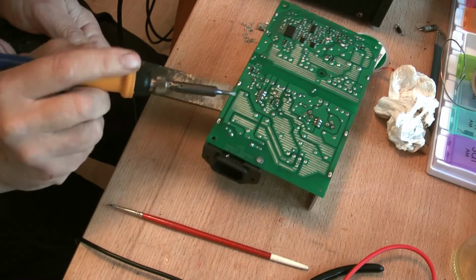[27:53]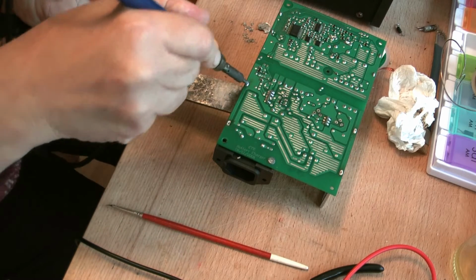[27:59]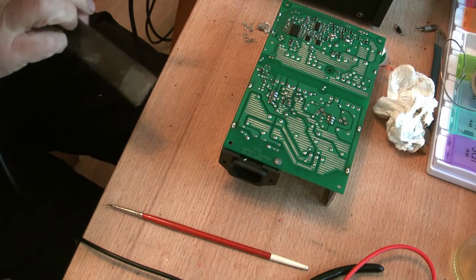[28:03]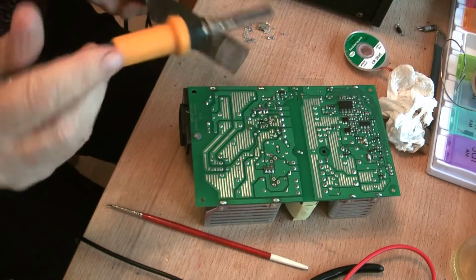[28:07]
Oh dear. Weird. Right, come around the other side. Have another go. Working the lug out. Molten. Yeah, there we go. One. And cool off. Every time you do something in front of the camera, somehow or another, it just turns out more difficult.
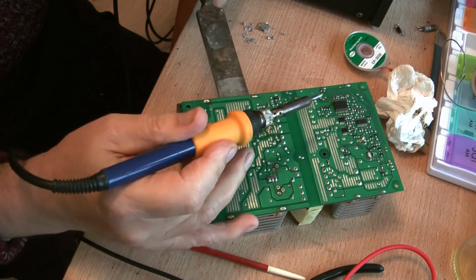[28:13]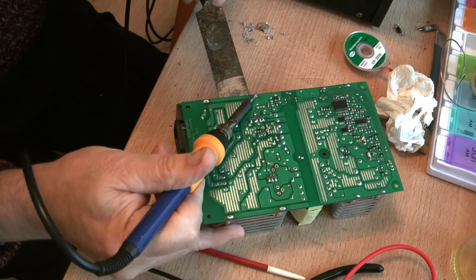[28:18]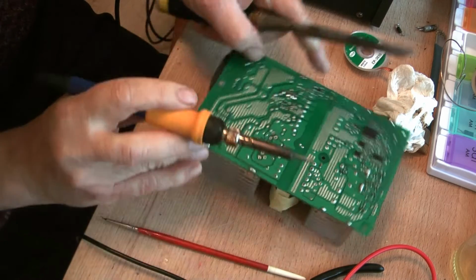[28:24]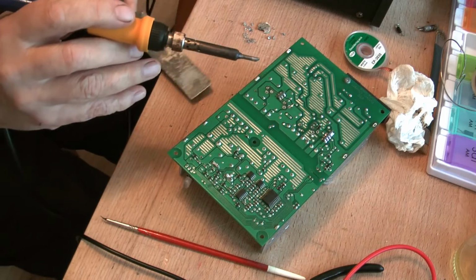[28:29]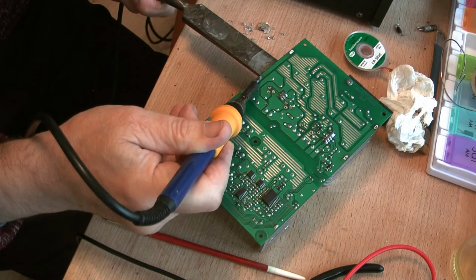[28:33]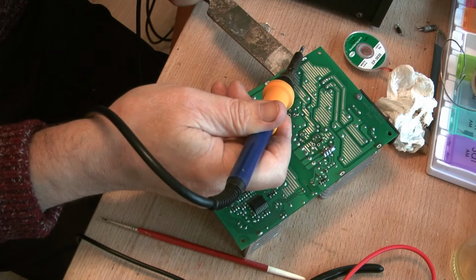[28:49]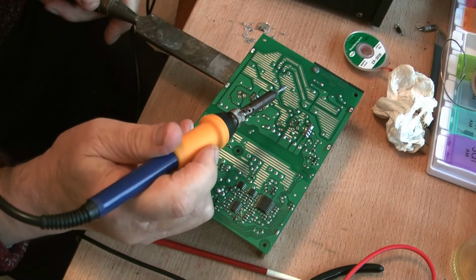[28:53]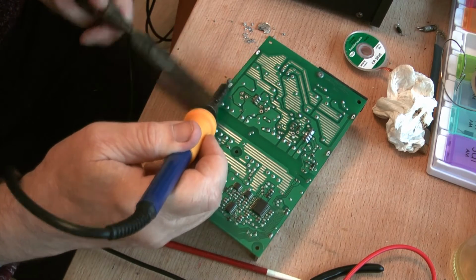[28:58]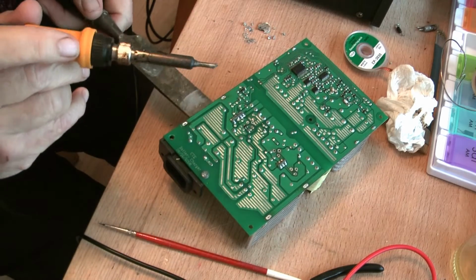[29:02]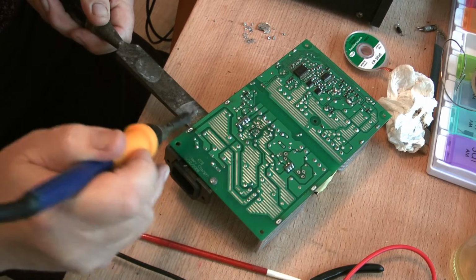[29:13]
Put that in there. Yeah, molten. Work it up. Probably out almost. And let's make sure. Let's see what happens. Up. Oops. That's three. And this one, three. And there. That's three.
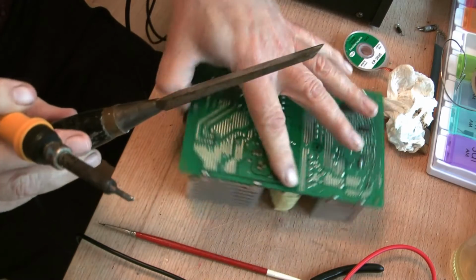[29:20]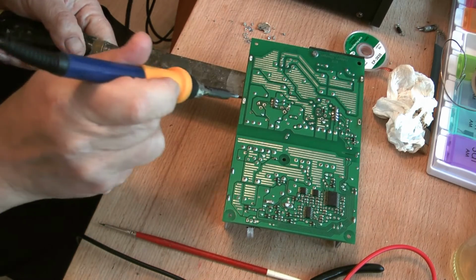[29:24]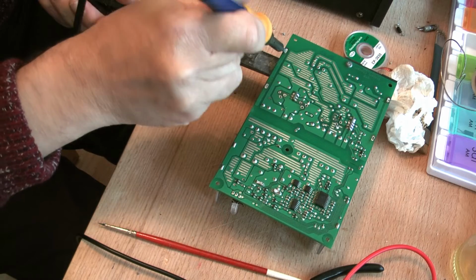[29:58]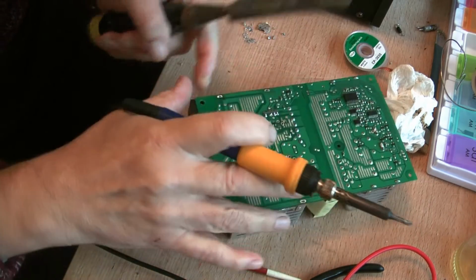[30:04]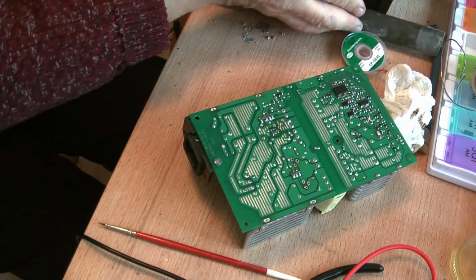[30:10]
Not quite. That's three. The one stuck in is this one. Why this one? I think that's three. I'll just wait for it. There you go. That's three. Is it through the other side? Yeah. So, you see how we got that out.
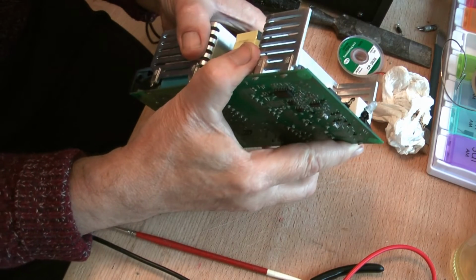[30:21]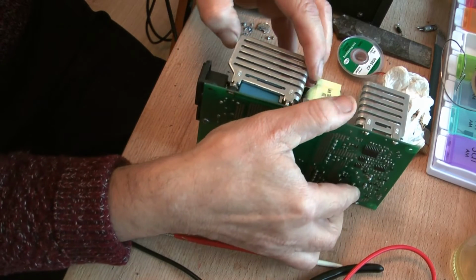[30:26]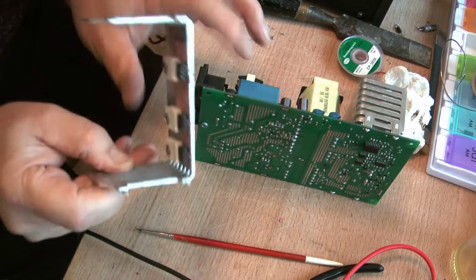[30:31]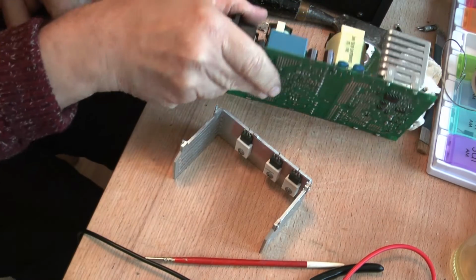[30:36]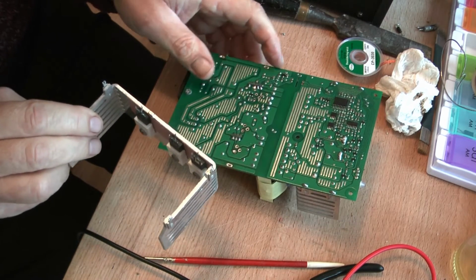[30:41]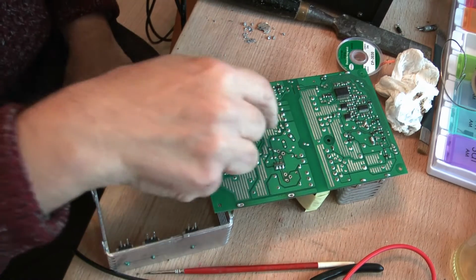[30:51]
I'm resetting the temperature of the soldering iron to what I normally have it at, so I don't make any mistakes in the future. And this one is still slightly, oh no, there you go. So that's out. It took a little bit of doing. I want to take out this, I'm using that there to prop it up.
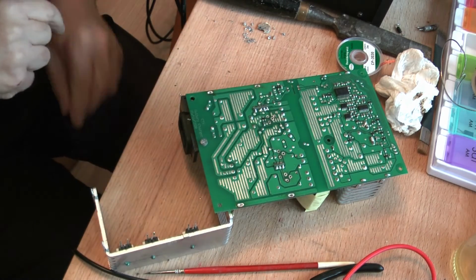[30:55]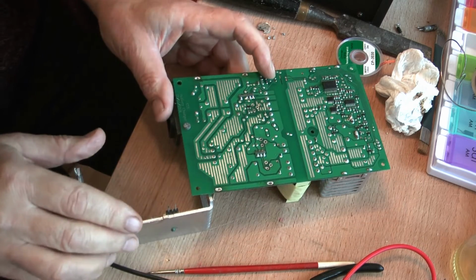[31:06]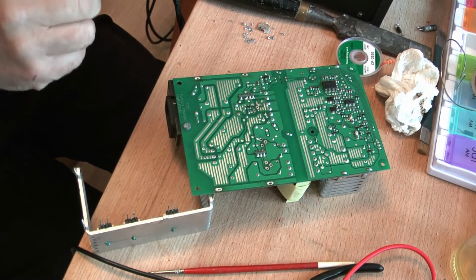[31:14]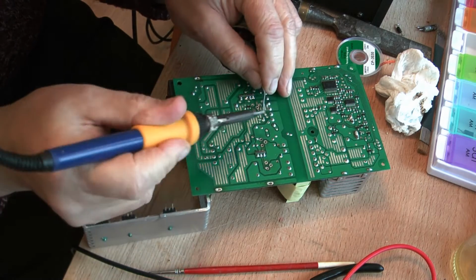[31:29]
I want to take out this diode, and it's probably, I don't know, I won't say tricky because I don't think it is tricky, but the leads are bent over, so using the solder sucker on it is a little bit problematical because you're going in at an angle, and it's best done if you can make good contact. Again, we'll dab it with a little bit of solder to set the ball rolling. I happen to know where the diode is, so I know which one to treat.
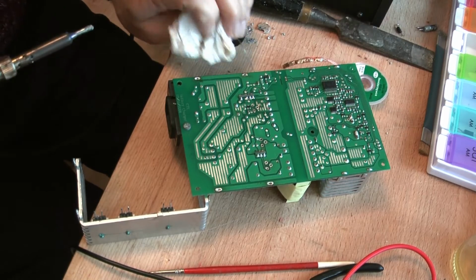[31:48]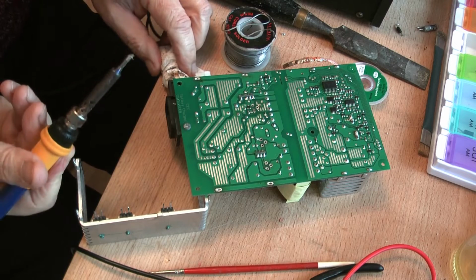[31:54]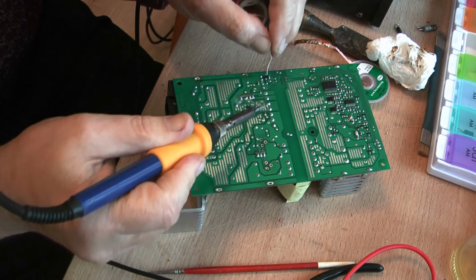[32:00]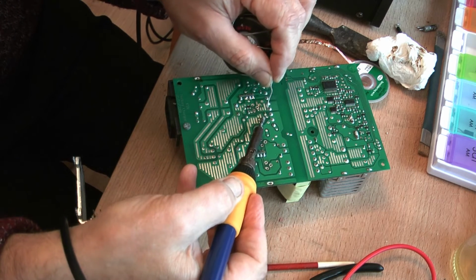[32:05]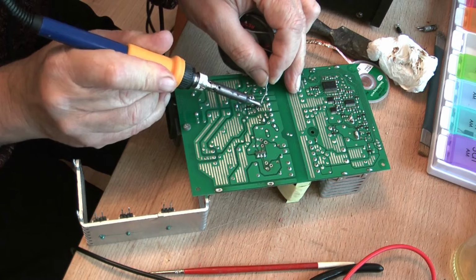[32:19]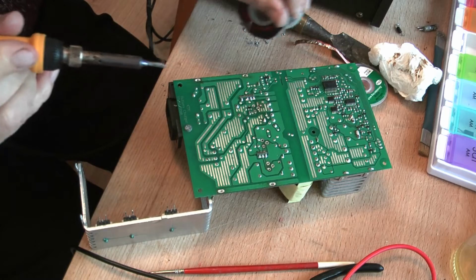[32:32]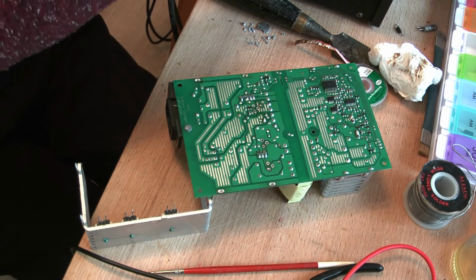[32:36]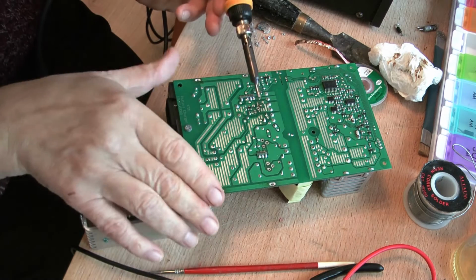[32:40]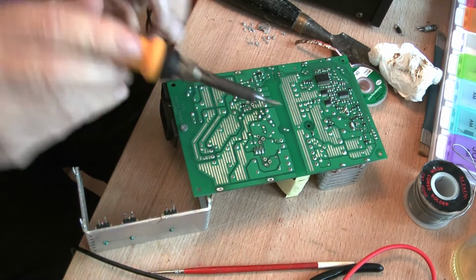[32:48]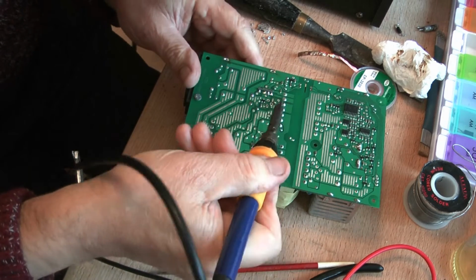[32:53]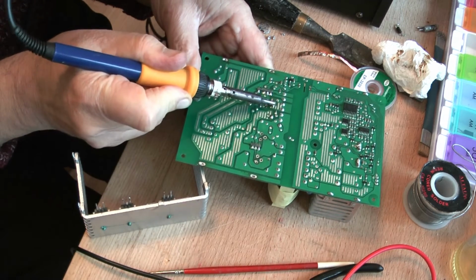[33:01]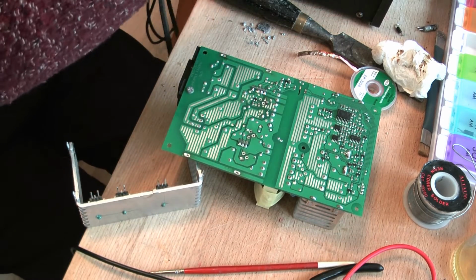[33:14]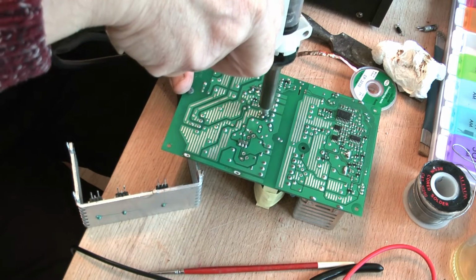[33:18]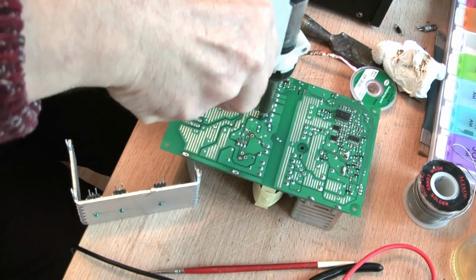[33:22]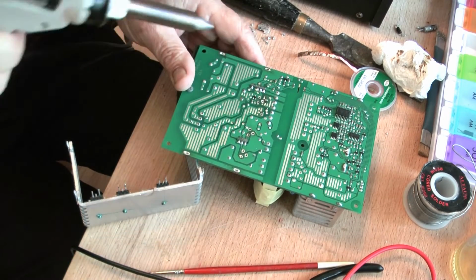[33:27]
Can we succeed? I have no idea. I tend to like to push the lead up with my soldering iron, like so, and do the same this side, if I can. All about getting it molten. If you can't get it molten, you can't push it up. There we go. No, we're going to be doing that for about a day. Get the other iron out. See if we can do the same on this one.
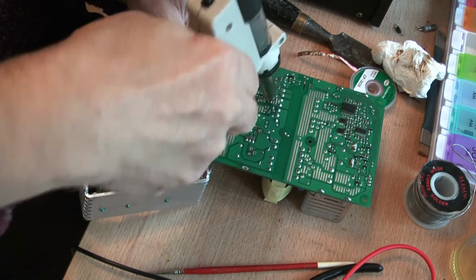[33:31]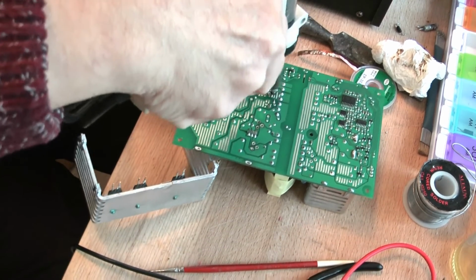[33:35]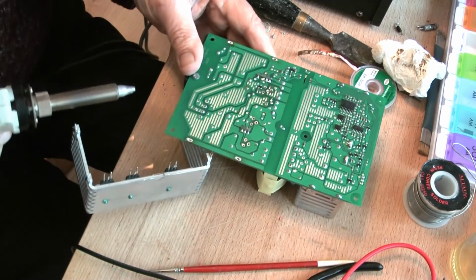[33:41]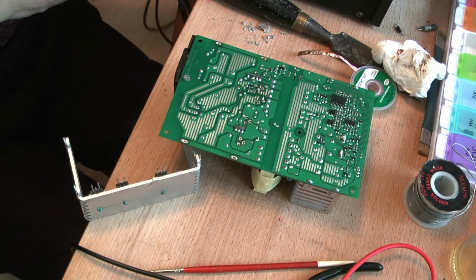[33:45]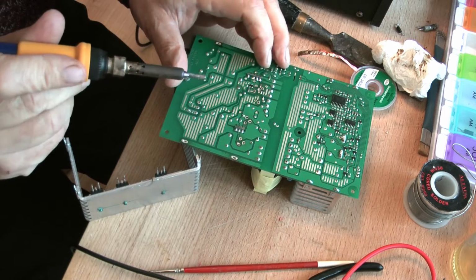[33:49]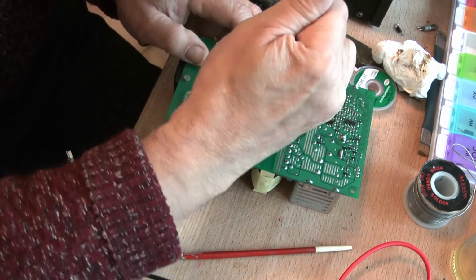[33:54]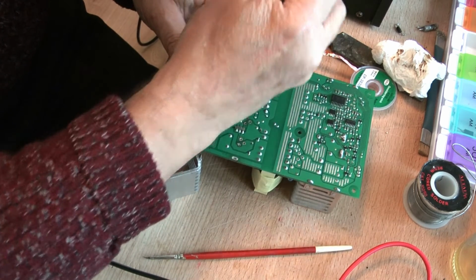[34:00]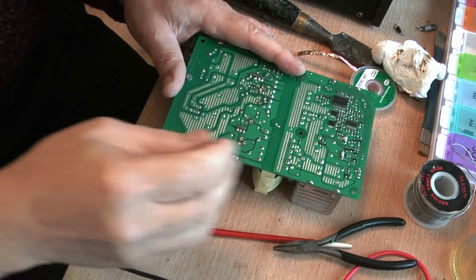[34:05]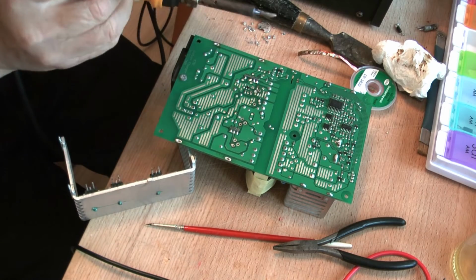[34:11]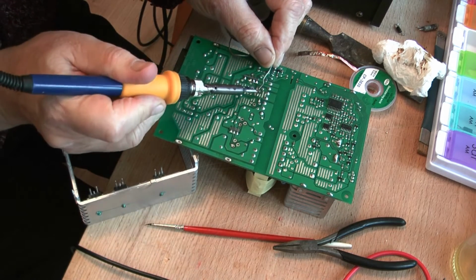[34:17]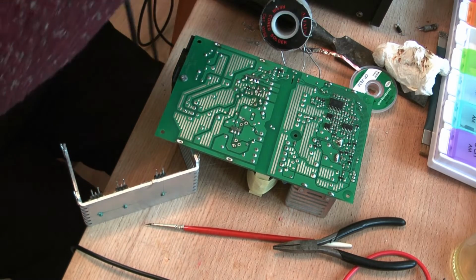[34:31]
Alright, let's get those leads up nice and straight. Now, on this diode, because it's a bit of a power diode, it's got thicker leads. I'm going to put a little bit more solder on to see if we can reduce the temperature a bit more. Okay, and give it another go with the solder sucker.
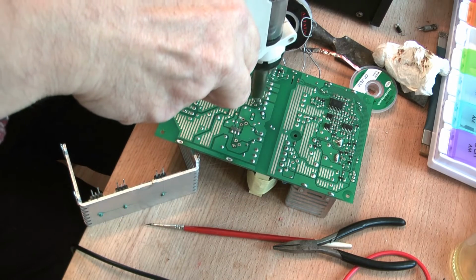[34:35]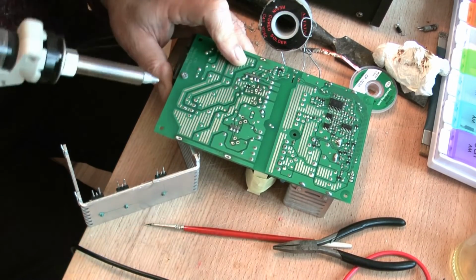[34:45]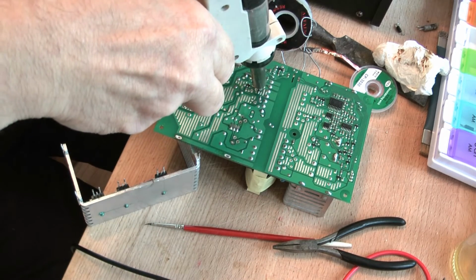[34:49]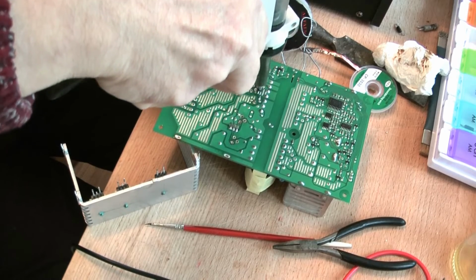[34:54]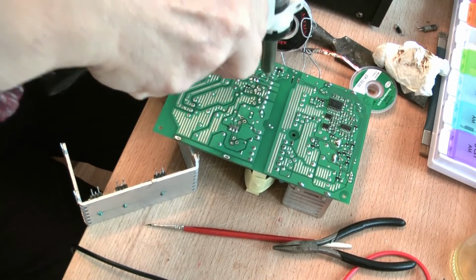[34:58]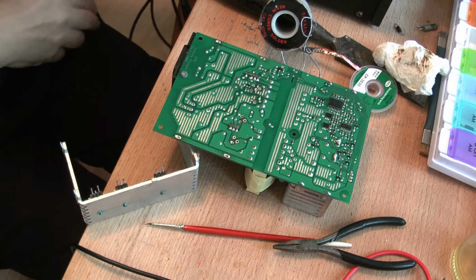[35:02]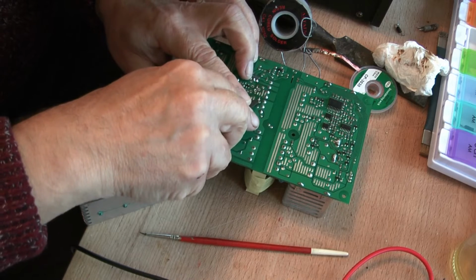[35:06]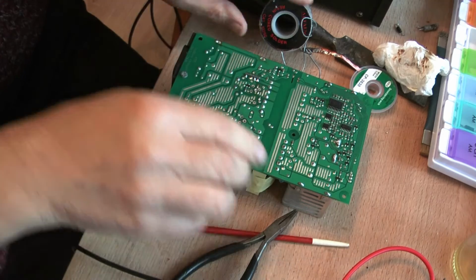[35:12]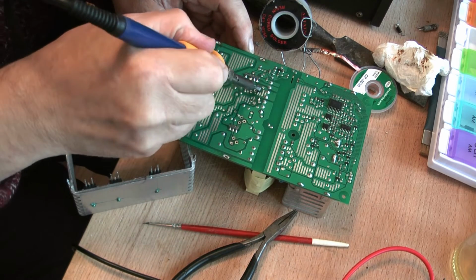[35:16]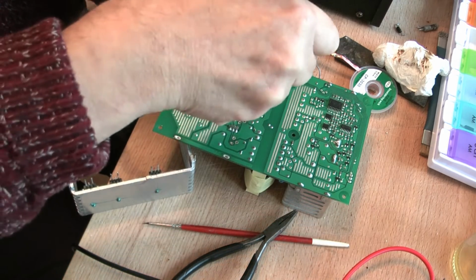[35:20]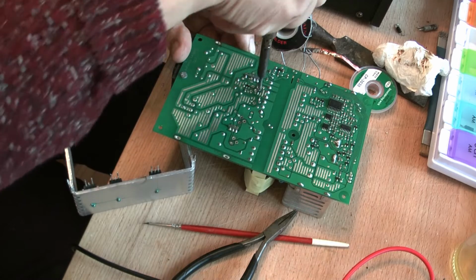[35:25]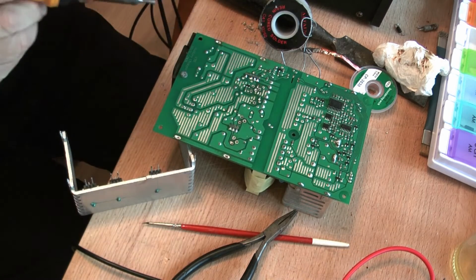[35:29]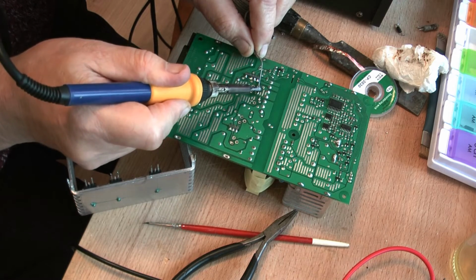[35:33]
And try this one. I think we're not there really, but let's see if I press the pump there, and I can't press it down. Right. Press it through the soldering iron. Not going, is it? Damn thing won't go. Right, bung this up a bit.
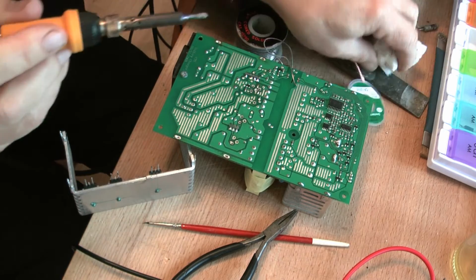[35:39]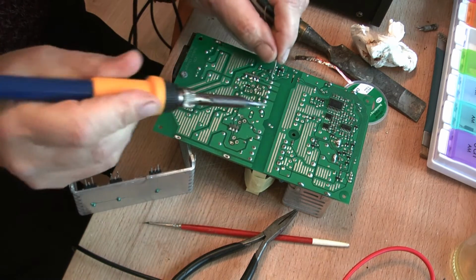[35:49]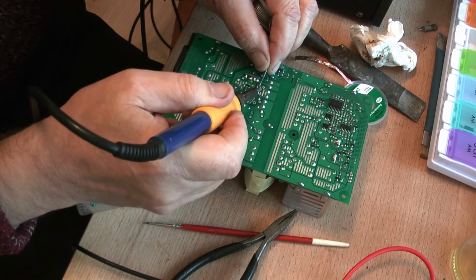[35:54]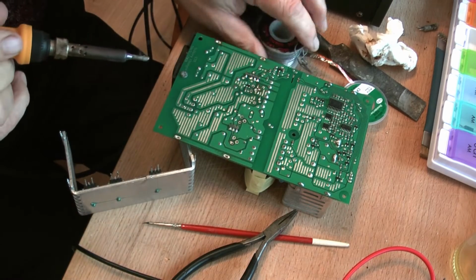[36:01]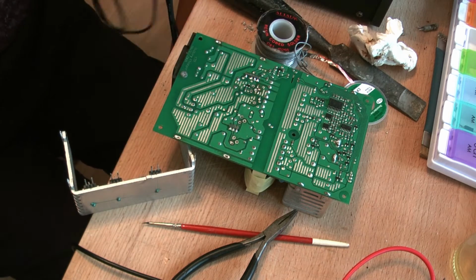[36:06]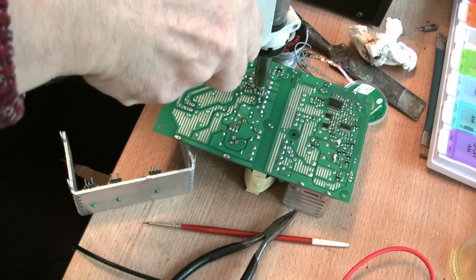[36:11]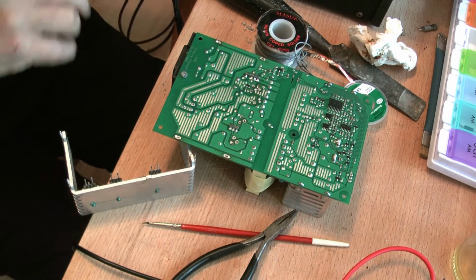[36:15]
Really, it's during this sort of process you can do a lot of damage to the PCB tracks by having your iron up too hot and end up lifting them if you're not careful. Okay, well, I managed to sort of press the lead through, and I'm going to try and put my solder sucker on top. That'll do. I'll have to. And we'll go over to the other side, see if we can get it out now.
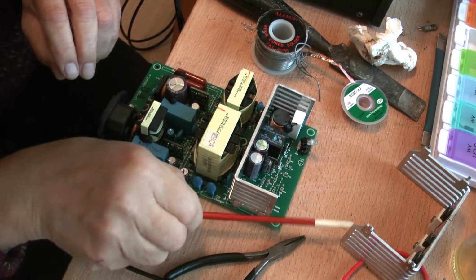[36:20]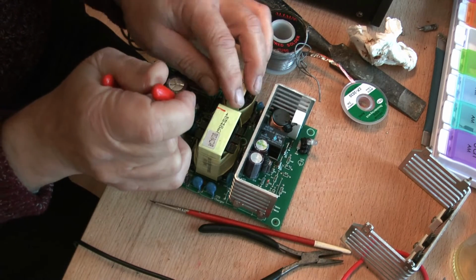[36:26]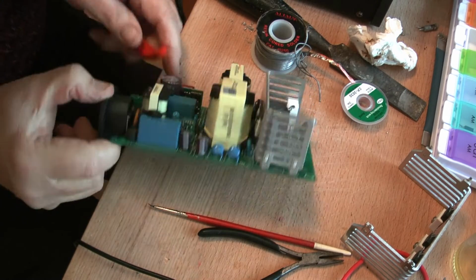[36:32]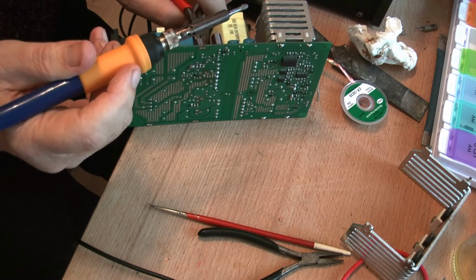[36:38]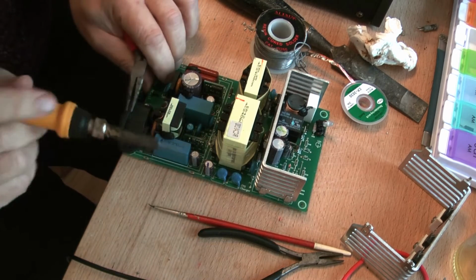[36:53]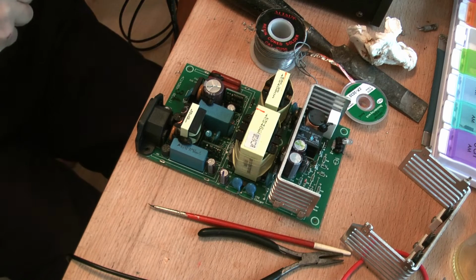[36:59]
Got a lot of those pliers there. Well, one edge out. And a combination of the iron and pair of pliers. There we go. Oh, dropped it on the floor. Unfortunately, the markings on the board allow you to know which way around to put it back in. Switch these suckers off. Reduce the temperatures of my soldering iron.
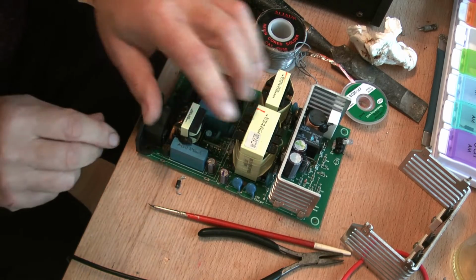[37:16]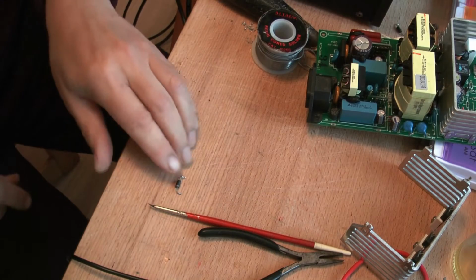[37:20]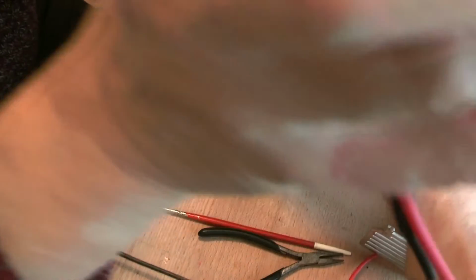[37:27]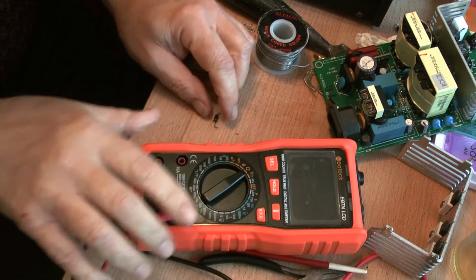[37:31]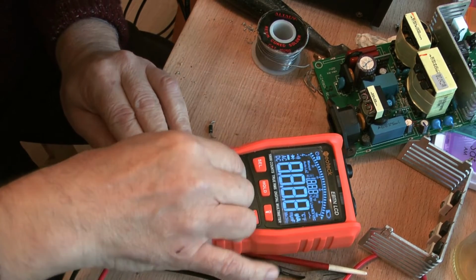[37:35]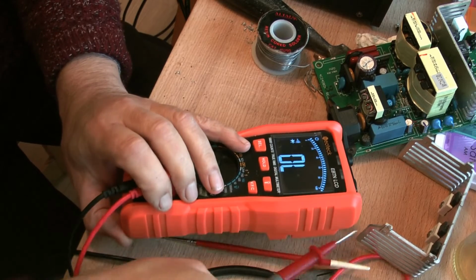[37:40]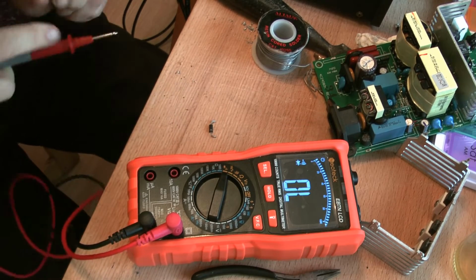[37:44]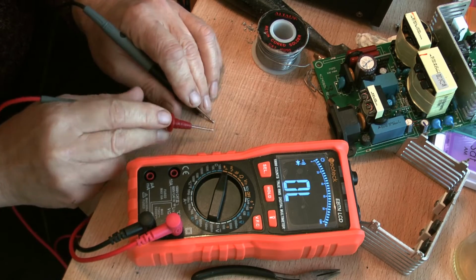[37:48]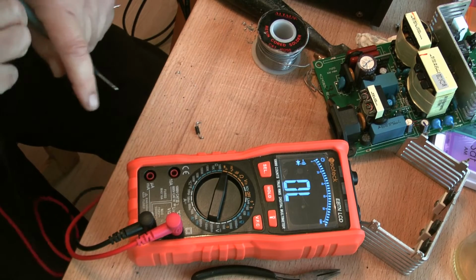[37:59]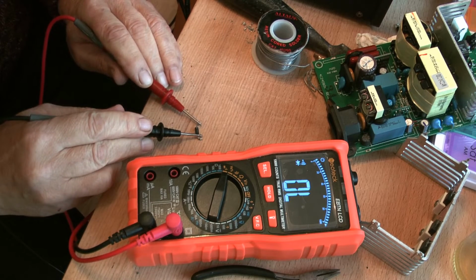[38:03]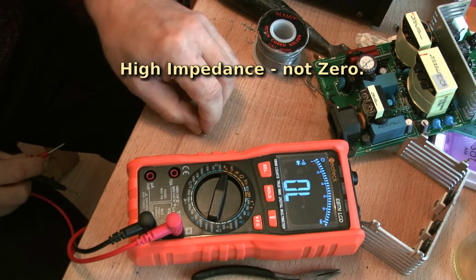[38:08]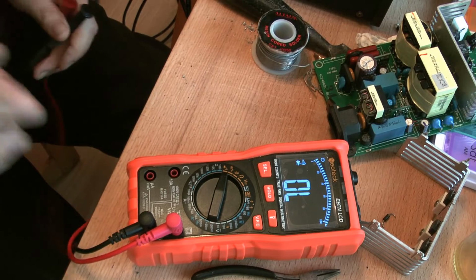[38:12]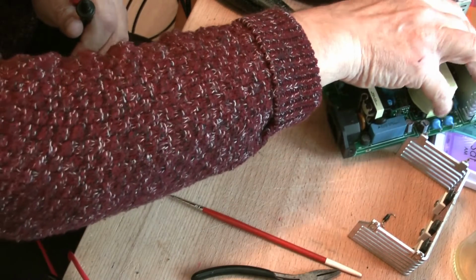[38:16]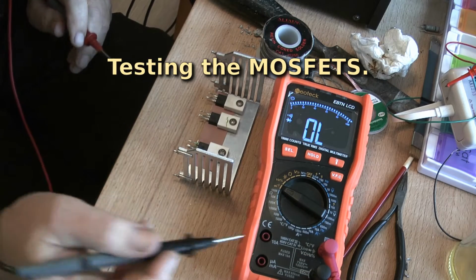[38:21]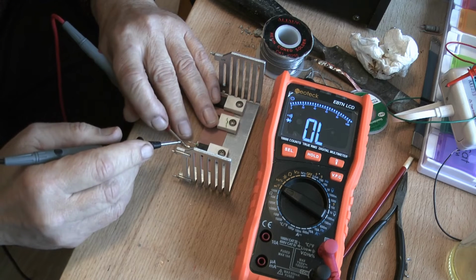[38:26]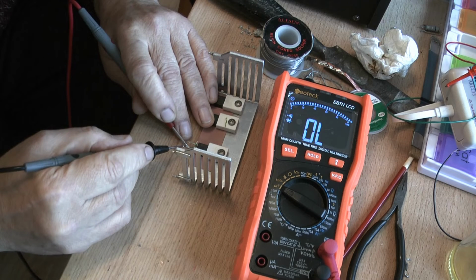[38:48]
Right, we've got our meter in diode mode. We'll go on to our first MOSFET, which I know is an N-channel MOSFET, so drain, source, nothing. There. Right, now this one is on. Let's just switch it off. Open. Switch it on. Well, broadly speaking, that one seems to be working.
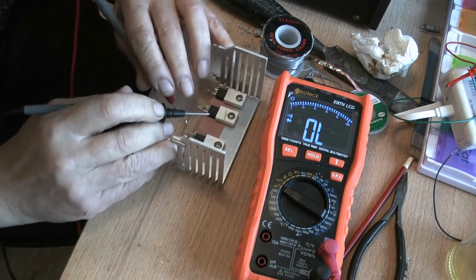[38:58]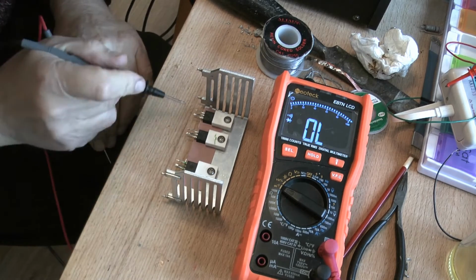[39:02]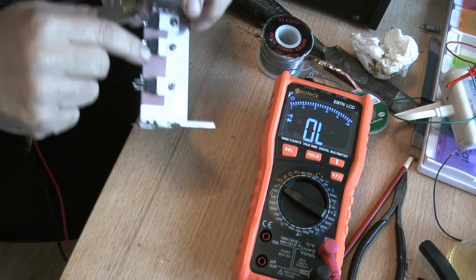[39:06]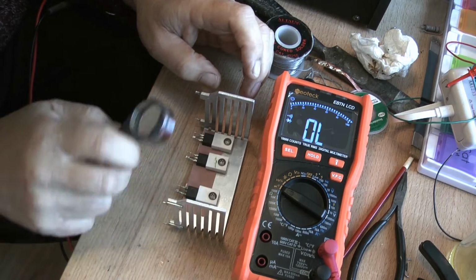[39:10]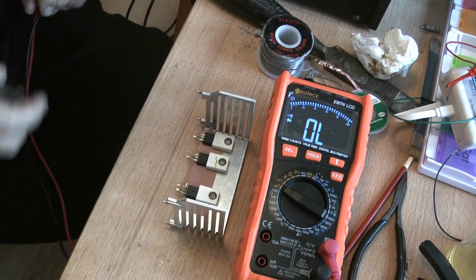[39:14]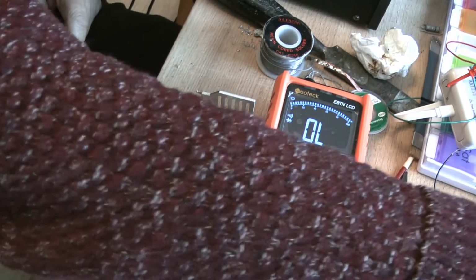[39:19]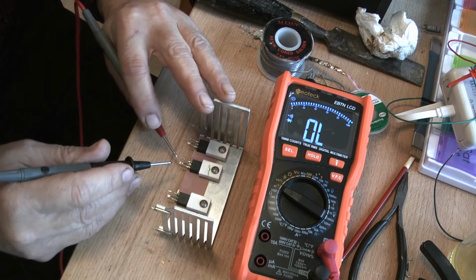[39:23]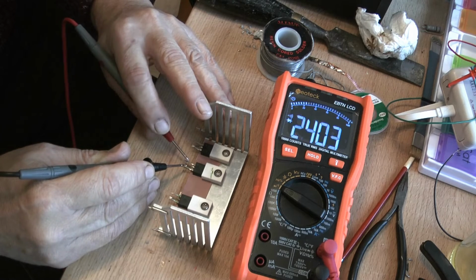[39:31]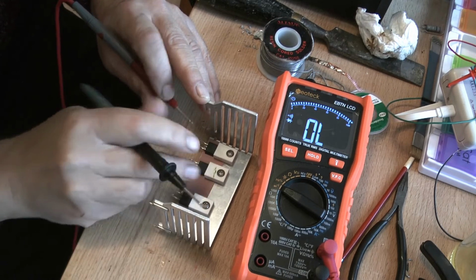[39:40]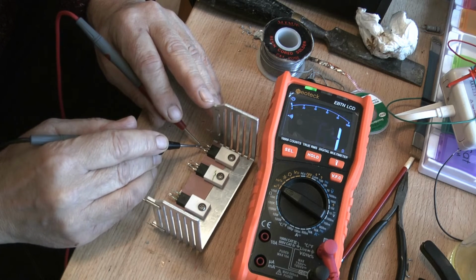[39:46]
Am I right to assume that these are going to be N-channel? Let's read the numbers on them first. Well, on both of them it says IRF 644, and I'm going to go and check to see what they are and come back. They are N-channel MOSFETs, IRF 644, and we'll just see. It says 1 ohm, and that says ridiculous. Do that again. Oh, these are blown.
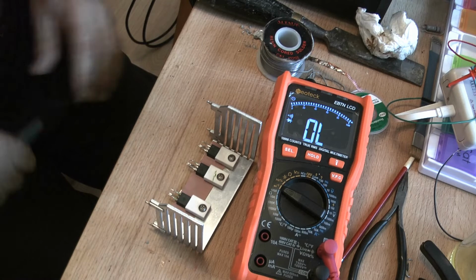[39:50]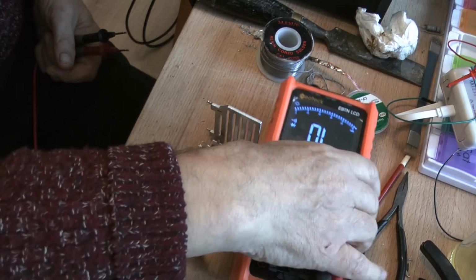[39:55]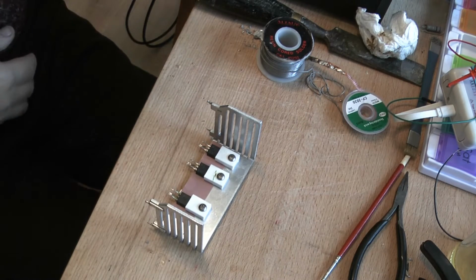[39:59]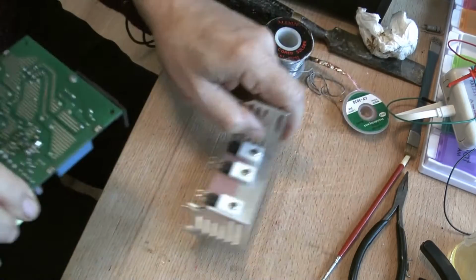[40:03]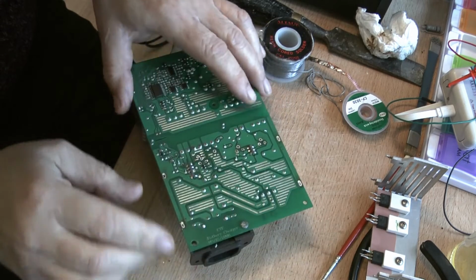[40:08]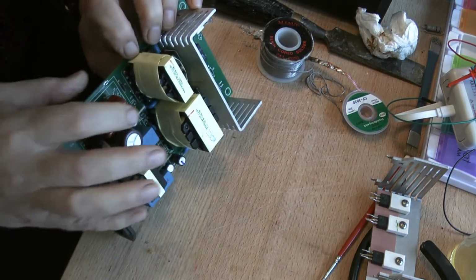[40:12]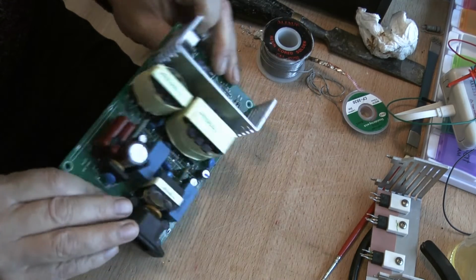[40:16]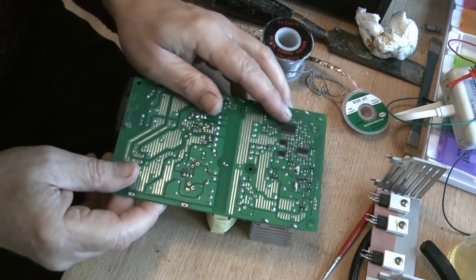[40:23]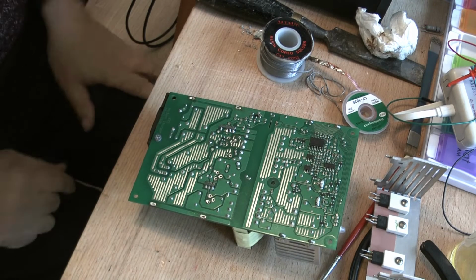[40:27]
So they've got to be replaced, and I think that's game over for today. But we've got to ask ourselves the question, what caused them to blow? And I'll come back to this board. And we've got this little piggyback board in here. It's the other piggyback board, so the one I repaired on the other one was here. This is another one. I think we'll desolder that and take that out. And then off camera I shall start testing components, and if I come across anything I'll explain it later.
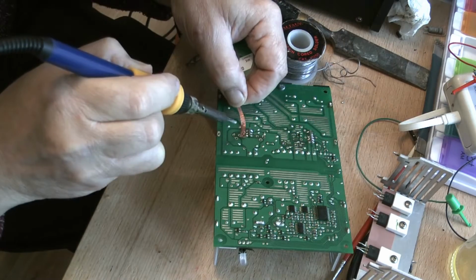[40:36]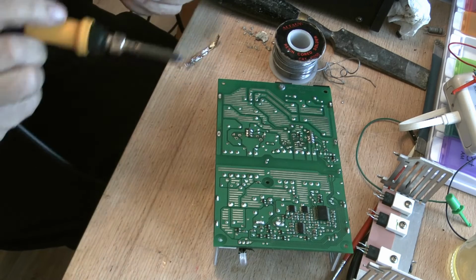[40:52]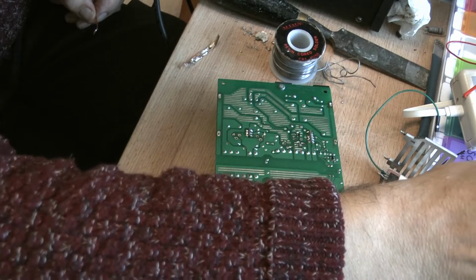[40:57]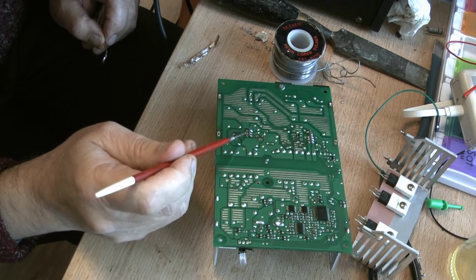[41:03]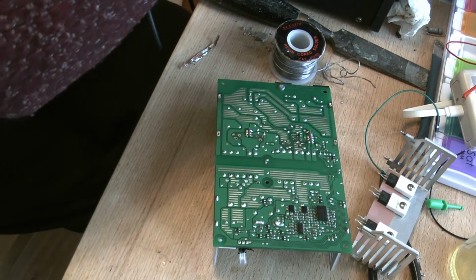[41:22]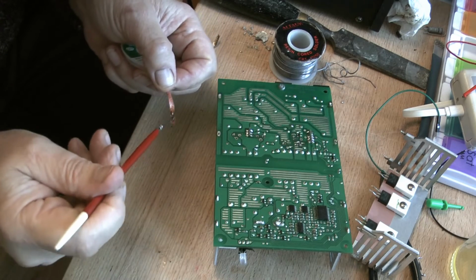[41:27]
I was hoping for it to sort of desolder better than that. Perhaps there's one instance where we might use a bit of flux. Now, I'm not happy with my homemade flux. I think that it's sort of evaporated a lot of its isopropanol that was in there, and I don't think it's flowing very well. Mind you, a little bit on here will help.
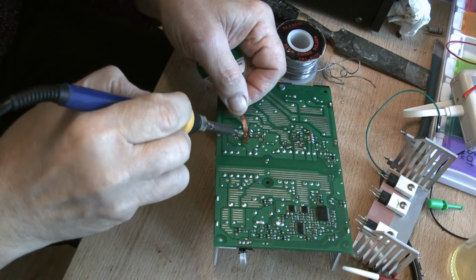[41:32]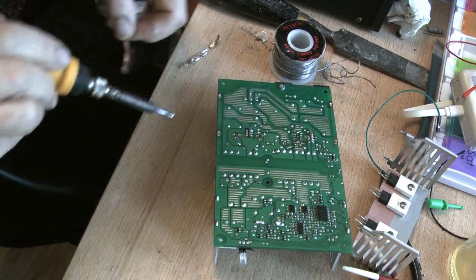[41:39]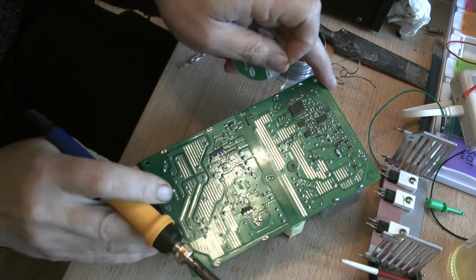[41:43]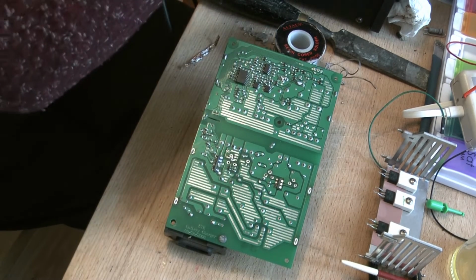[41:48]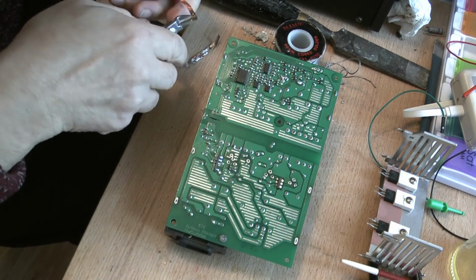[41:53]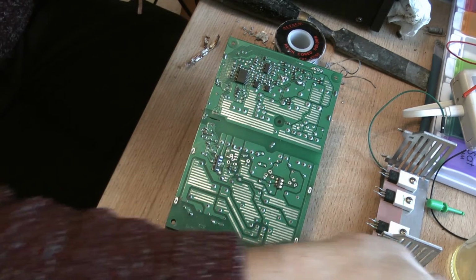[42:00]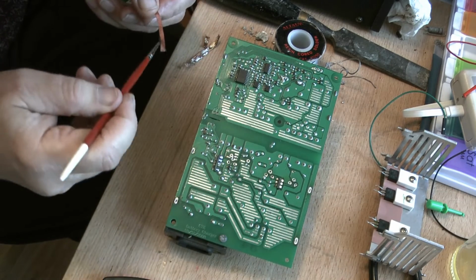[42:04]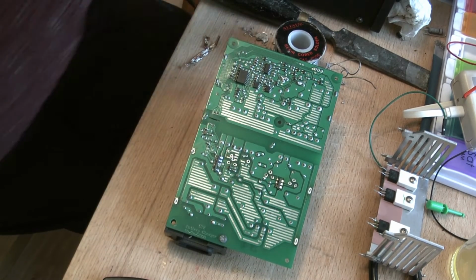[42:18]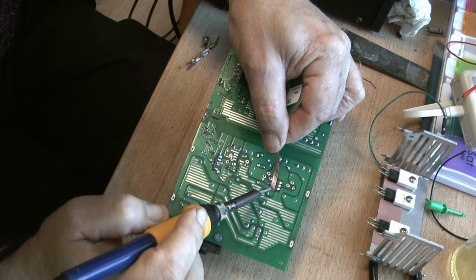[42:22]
Let's go. And burning off and leaving a horrible residue. And that is because it's too rich in rosin, I think. It may be the varnish on the board that's causing the problems, but I don't see much damage from where I've been doing all the desoldering, so I presume it's the flux. And well, I never used to do that. I think it's just the concentration of rosin and alcohol, just too rich in rosin. 5:1 seems okay. A little bit more. Right.
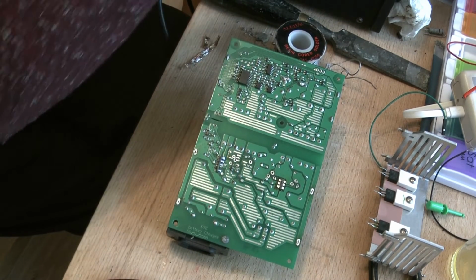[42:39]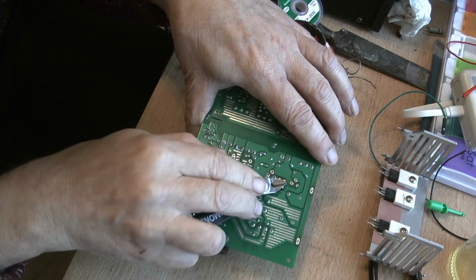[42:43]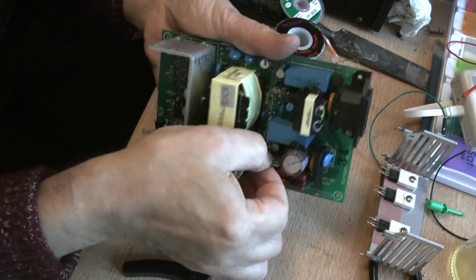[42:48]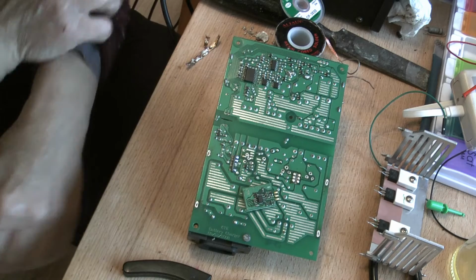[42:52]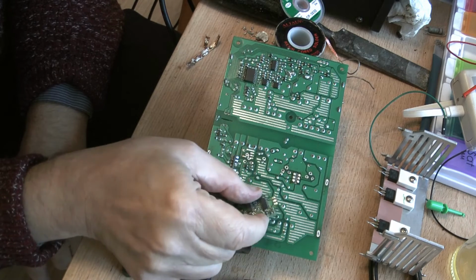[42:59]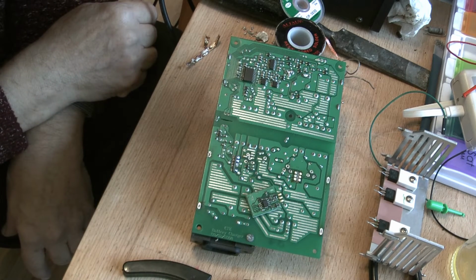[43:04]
Now we should be able to remove that board. And out she comes. I didn't think I was going to like that method of mounting the bolts, but I'm quite chuffed with it. It works well. Easy to put in place and easy to desolder. Right, well, that's it for today. Now to go and find some replacement components.
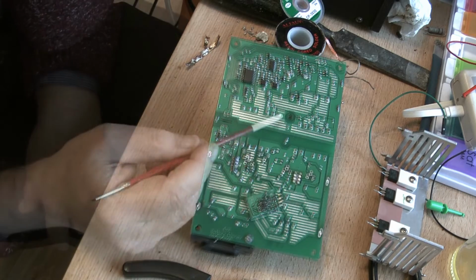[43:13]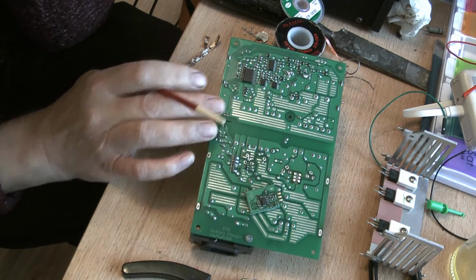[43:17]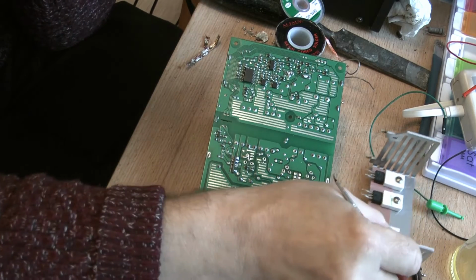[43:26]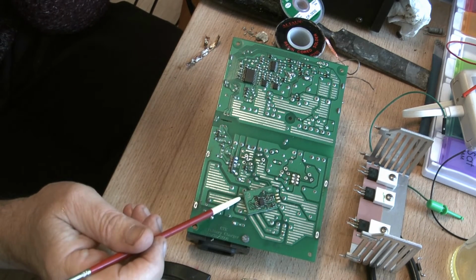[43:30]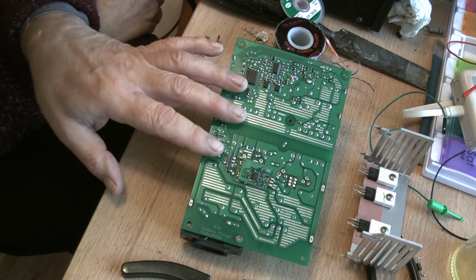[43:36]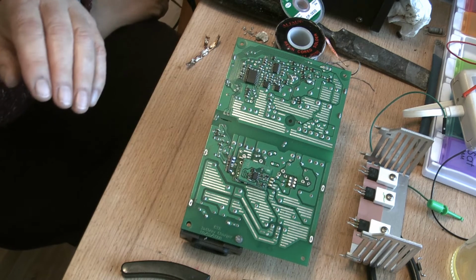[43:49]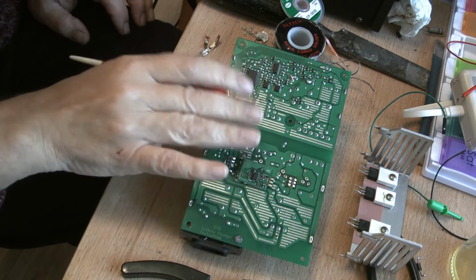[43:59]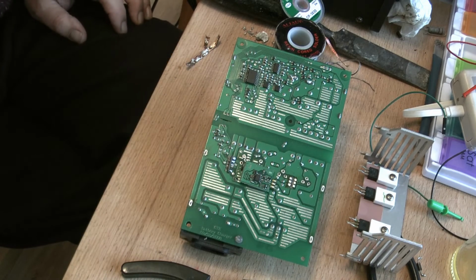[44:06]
One last thing about these boards, they're uneconomic to repair in that they take too long to sort of disassemble, and also the replacement transistors and that tend to be a little bit on the expensive side. There's no guarantee that what I've done will work forever and a day, and if it all blows up again, then I'll go out and buy a less expensive, more modern power supply to do the same job, and they are out there and available. But I'm not giving up just yet, so we'll come back to this after I've sourced some transistors and checked it all out for everything else.
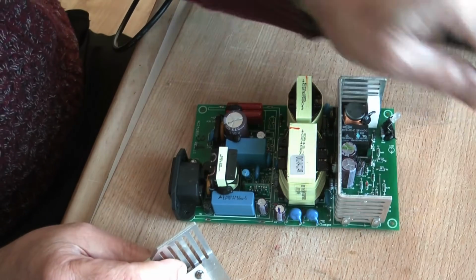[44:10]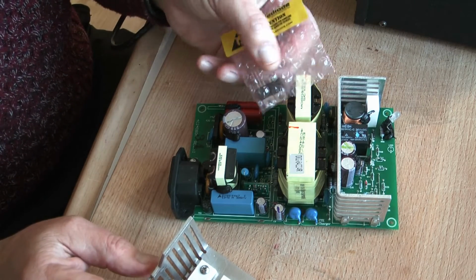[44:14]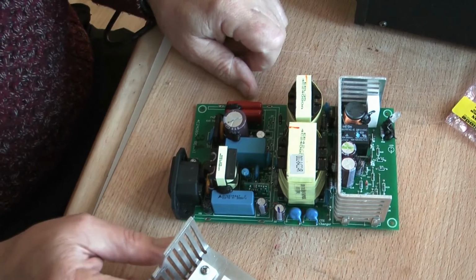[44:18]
It's almost 2 weeks later, and it's taken a week and a half for the components to get here in the post, and it's the silly season for the post at present.
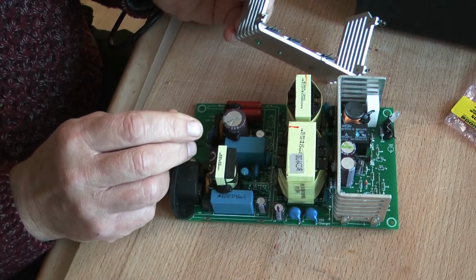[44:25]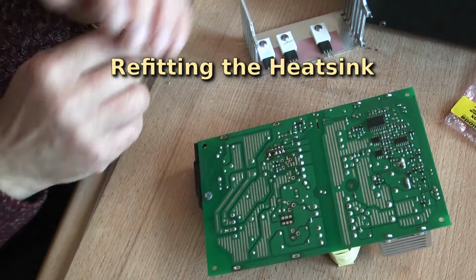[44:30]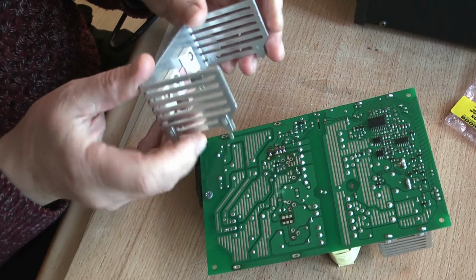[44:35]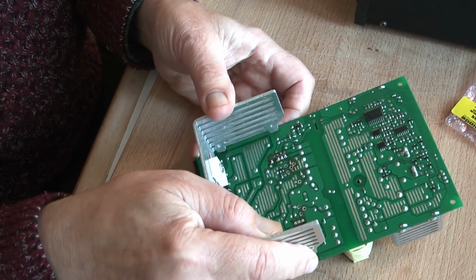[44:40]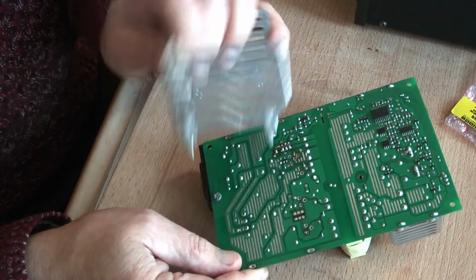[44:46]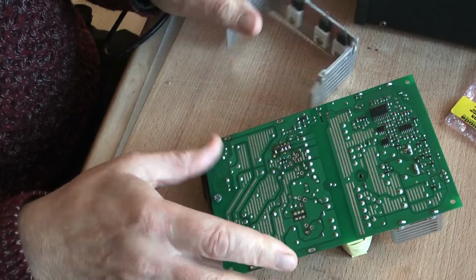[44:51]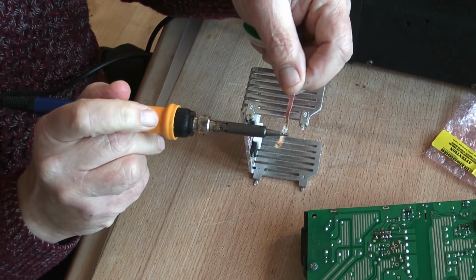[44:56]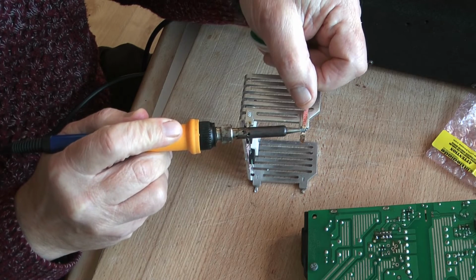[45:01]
And before we go any further, I think it's best to try and clear out these holes first and make sure everything is going to fit. I know we're upside down, but these will never go back in straight in, and it can be a very frustrating job getting them back in. So we're going to clean these little tags up and make sure we clean the holes out. The cleaner these are, the easier it's going to be to get them into the board.
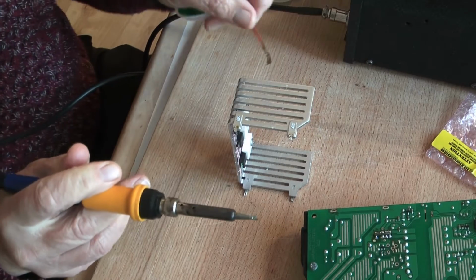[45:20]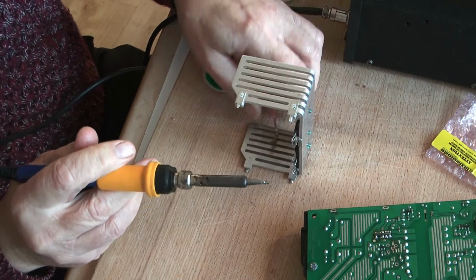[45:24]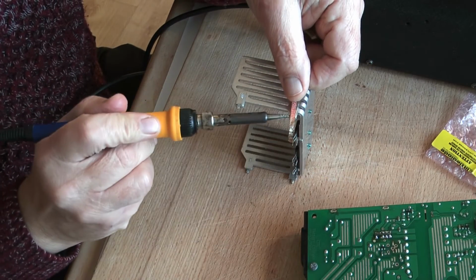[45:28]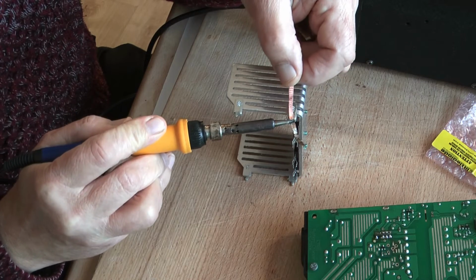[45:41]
As you can imagine, I've got my soldering iron turned up to a fairly high heat, which is about 300 degrees. It's all a little bit meaningless, it's just got to be hot enough to do the job. And I've got that cleaned off. Flip those over. Do the same this side. There we go.
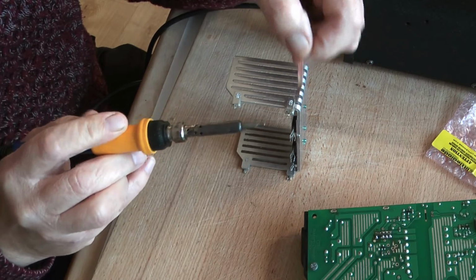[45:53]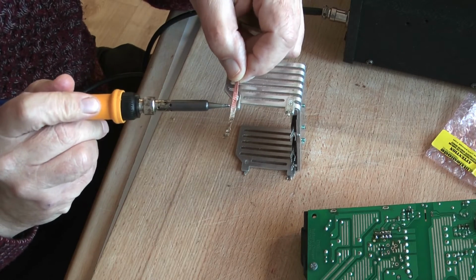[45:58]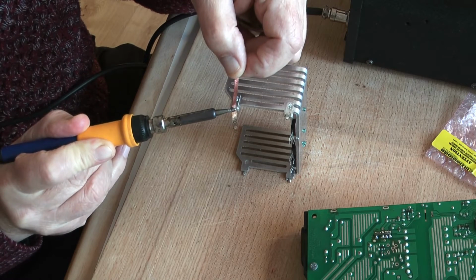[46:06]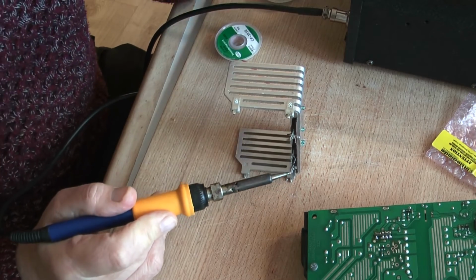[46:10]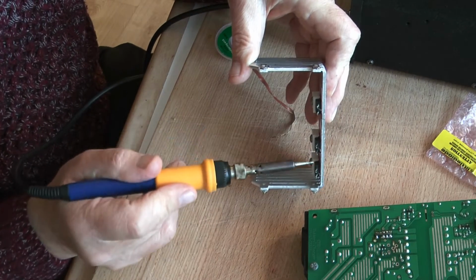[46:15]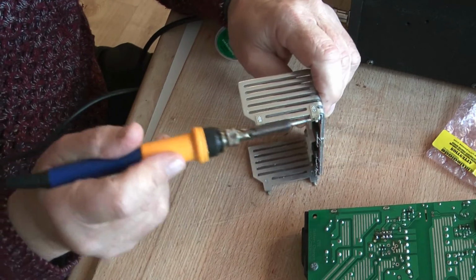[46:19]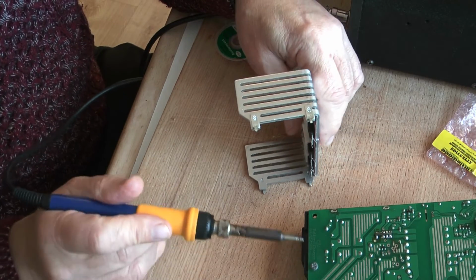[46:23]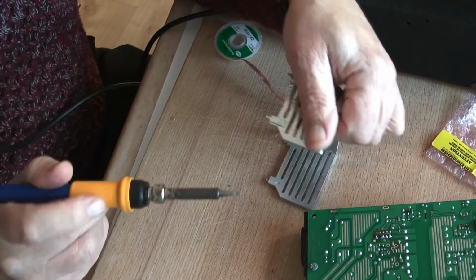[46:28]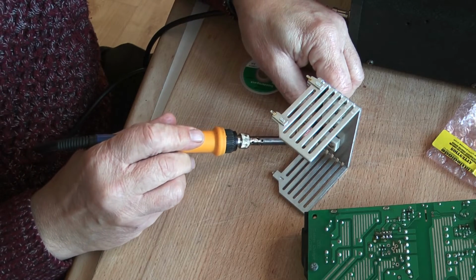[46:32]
A little bit more heat into that. Okay, and we'll clean this one up. If you're having trouble, sometimes a little bit of flux will help too. When it comes to reassembling it, it's going to make our life a lot easier when we have to locate all the pins in the holes on the board, that these little lugs fit precisely and easily into the PCB where they belong. Just check the inside of the little lugs.
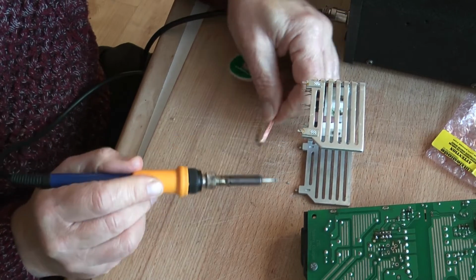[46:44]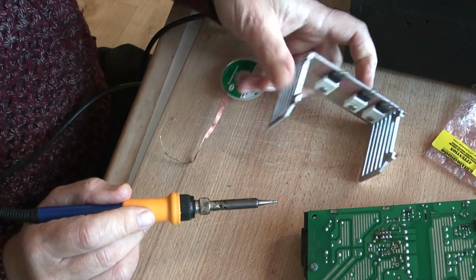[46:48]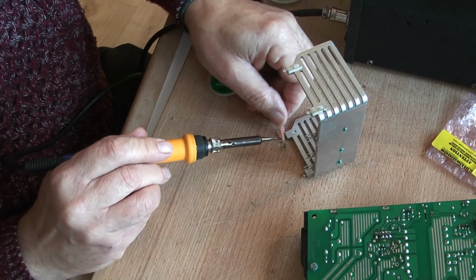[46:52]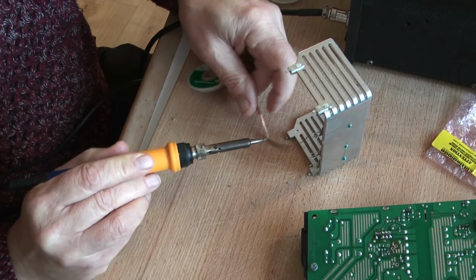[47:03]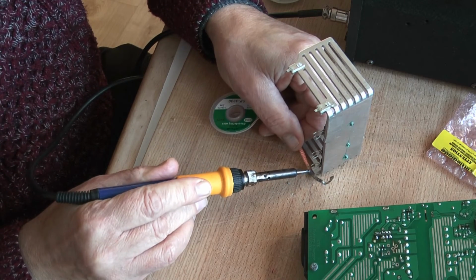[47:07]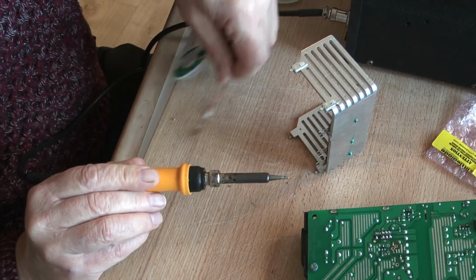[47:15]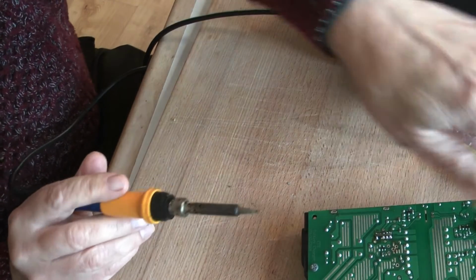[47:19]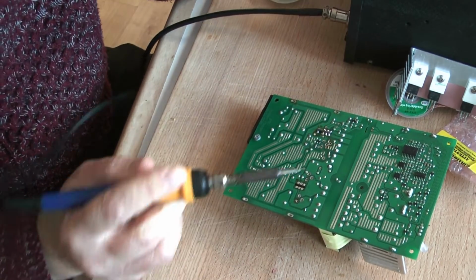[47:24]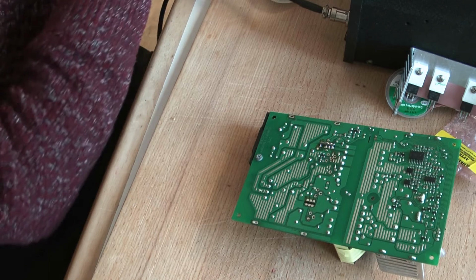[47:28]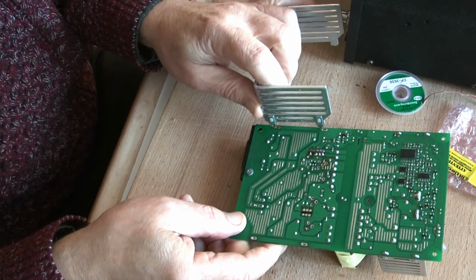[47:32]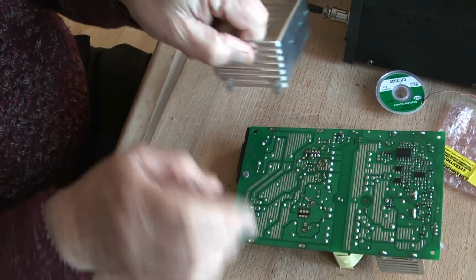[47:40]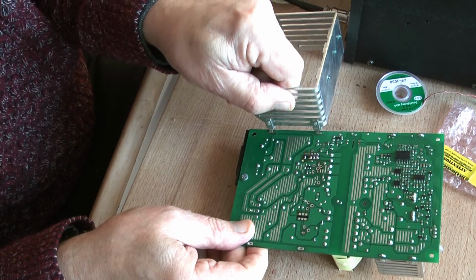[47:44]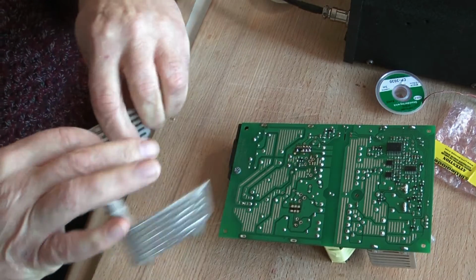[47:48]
Well, they seem to be okay. Just give that one. And I think that'll be alright. We're not picking up much solder, because there's so little on there already, so there we go. That should be okay. On the board, these two holes are relatively clean this side, and we can use those to test to see whether our little lugs are going to fit them nicely. And as you can see, they slide in quite nicely on that side, and they fit nicely that side, so there's no problems there.
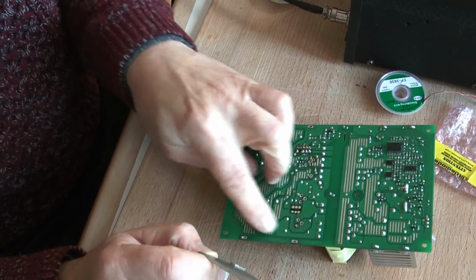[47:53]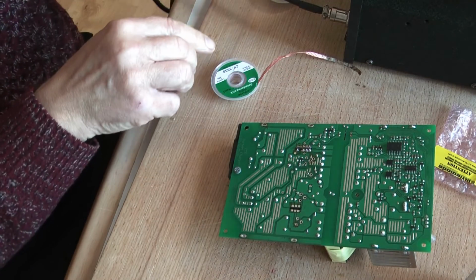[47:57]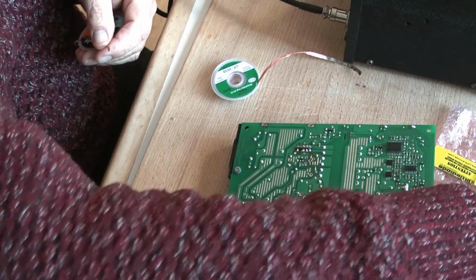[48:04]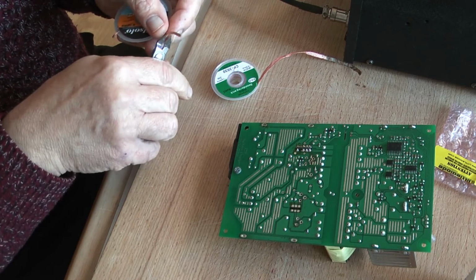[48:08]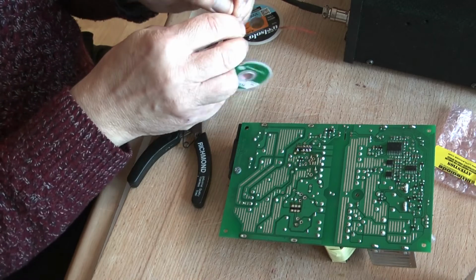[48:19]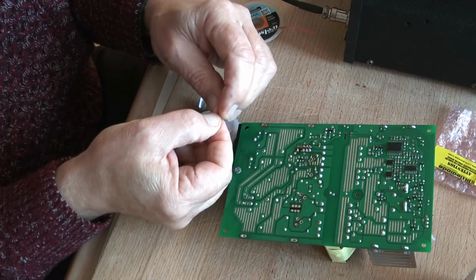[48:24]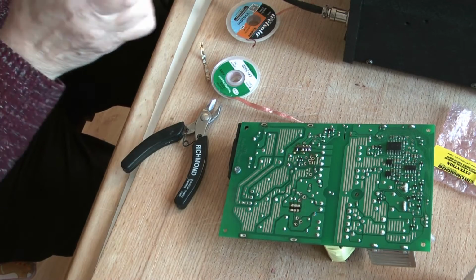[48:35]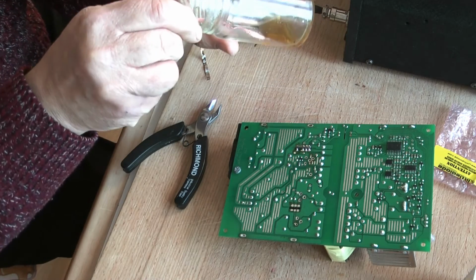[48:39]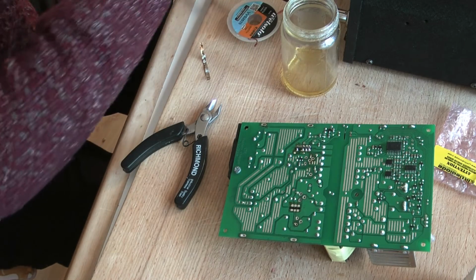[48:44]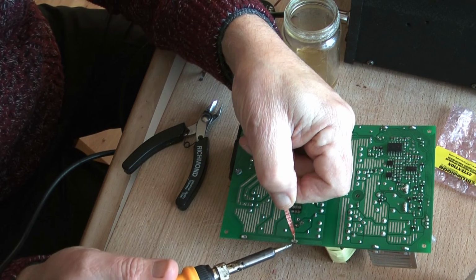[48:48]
Now these two holes are still blocked, and sometimes it's very difficult to de-wick them. If you're having trouble, a method that I use is to take a little bit of solder wick. In fact, I prefer to use a slightly fatter one. I really need to get my flux out, but first of all I'm going to pinch it together like so, wiggle it around, so make it round. Dip it in the flux, which will make life a little bit easier, or should do. And then I'm going to poke it in the hole, and hopefully it'll go in.
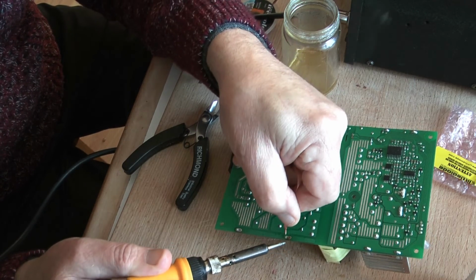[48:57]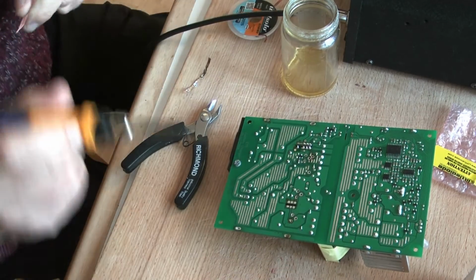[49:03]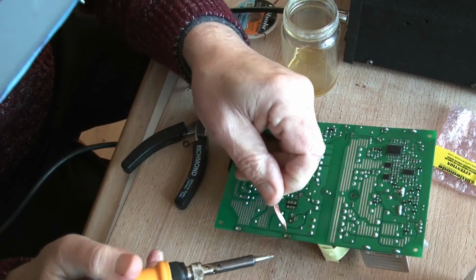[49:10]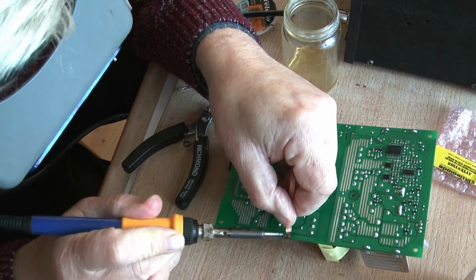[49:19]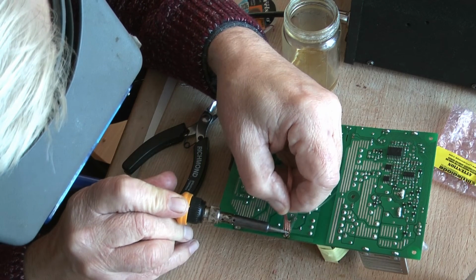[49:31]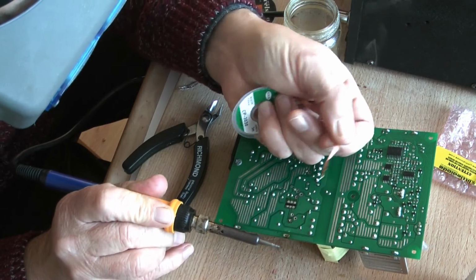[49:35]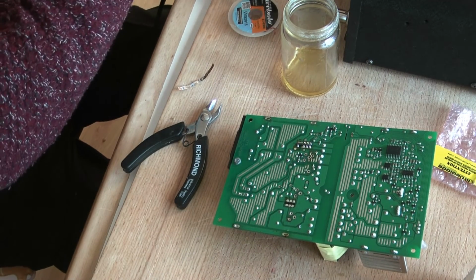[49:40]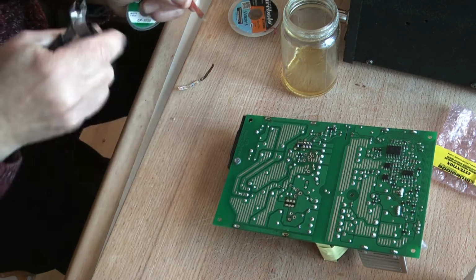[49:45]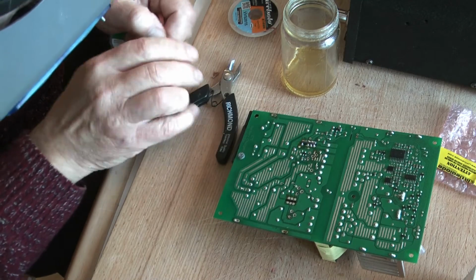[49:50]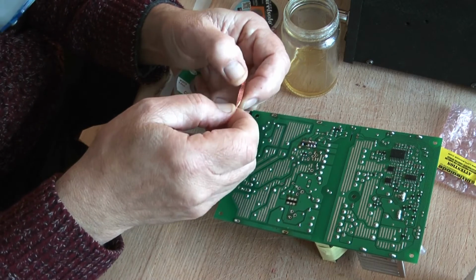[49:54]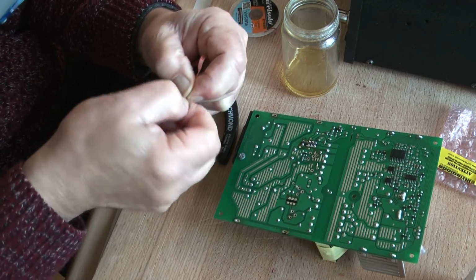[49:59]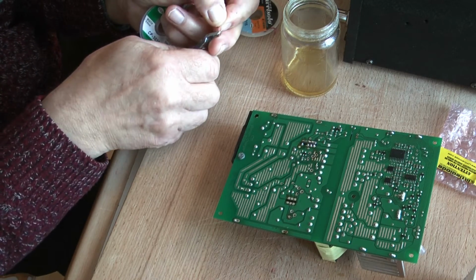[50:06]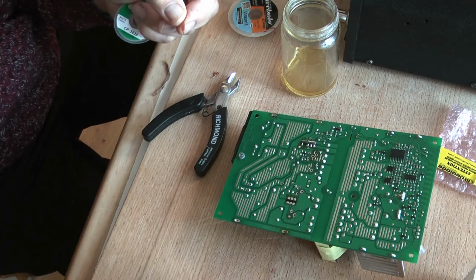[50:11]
I really ought to put my magnifying glasses on, see what I'm doing. And feeding it into the hole, and hopefully warming up my solder braid. Perhaps it didn't work as nicely as it has done for me in the past. Cut that bit off. Do what I did before. Cut that bit off. And I think I'll tin it. Bit of solder.
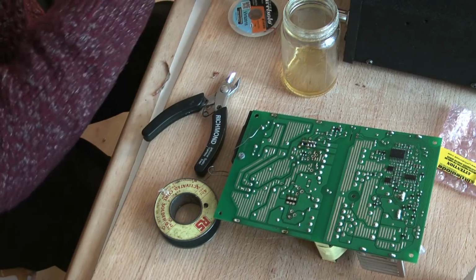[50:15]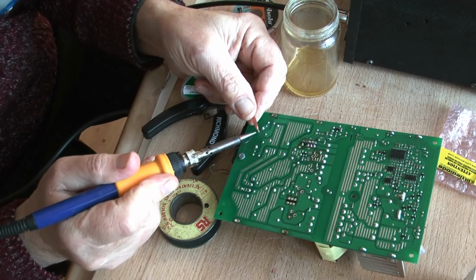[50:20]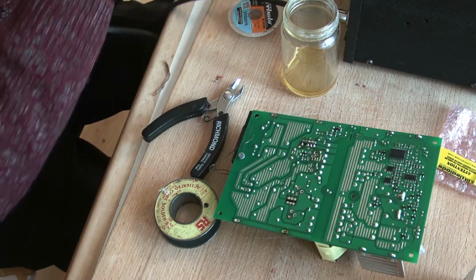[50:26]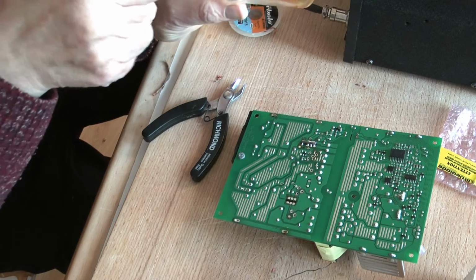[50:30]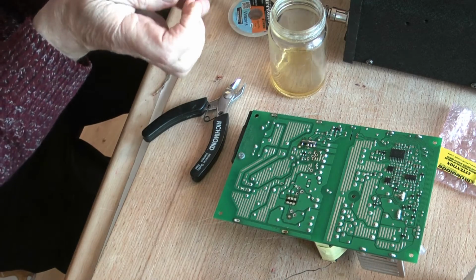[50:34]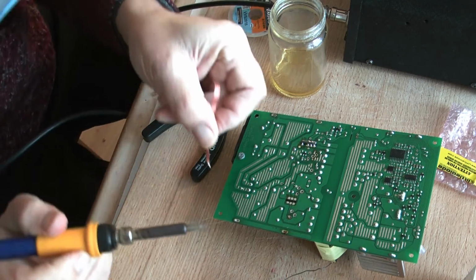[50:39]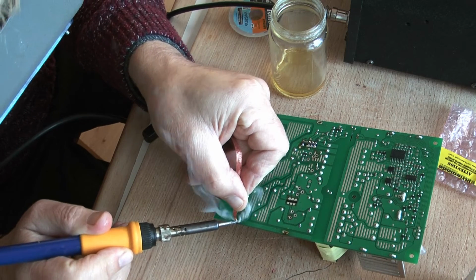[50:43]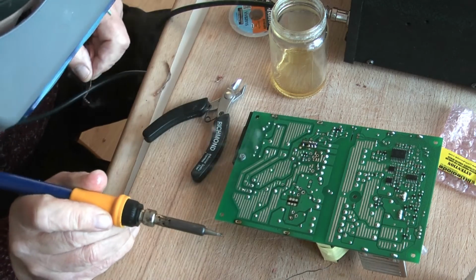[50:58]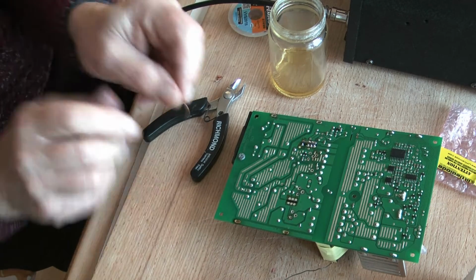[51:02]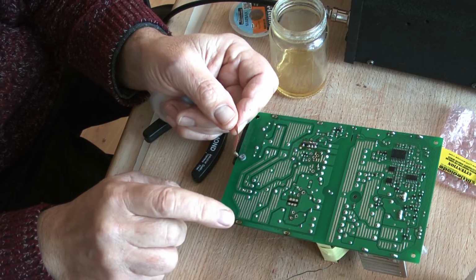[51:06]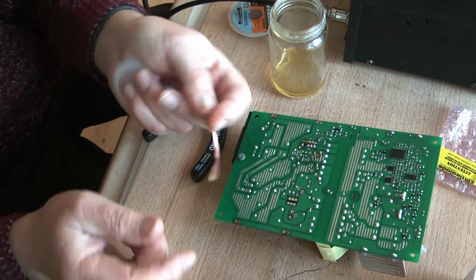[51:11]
And one of the reasons I'm having trouble is I haven't got the soldering iron bit that I would prefer to be using. I'm not letting that stop me. Let's see if it'll work on this one. We're in the hole. There we go. Get well into the hole. There we go. Nice clean hole. I do it this way because these holes sometimes don't de-wick by going across them. Sometimes they do, sometimes they don't.
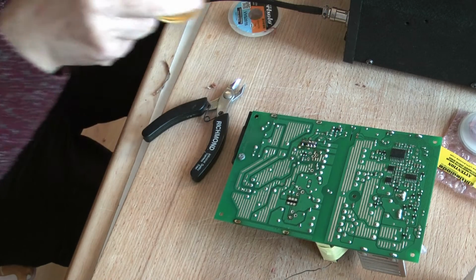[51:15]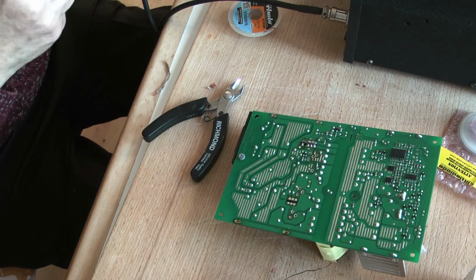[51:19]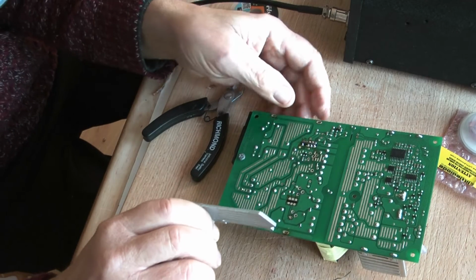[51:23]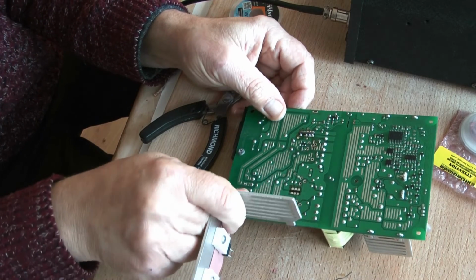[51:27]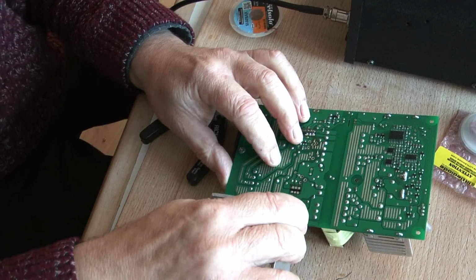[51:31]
We're now going to try and see if these lugs fit into the holes. If they don't, we'll have to carry on clearing them. They're fitting nicely now on that side, and those fitting nicely there.
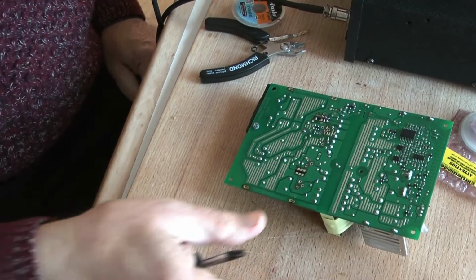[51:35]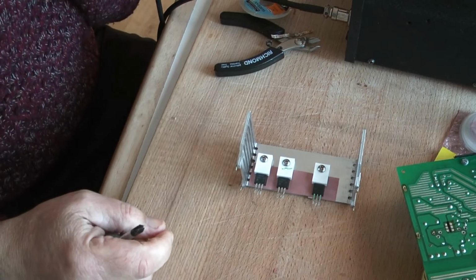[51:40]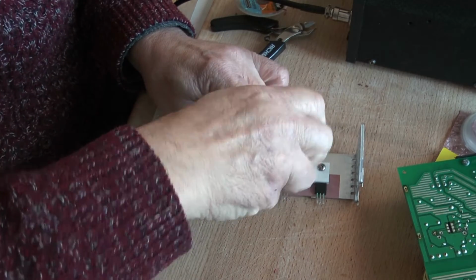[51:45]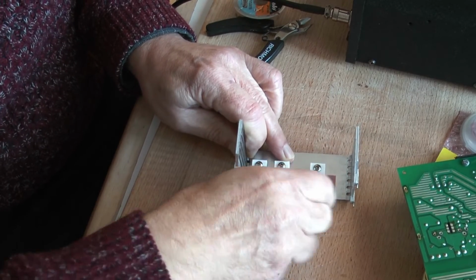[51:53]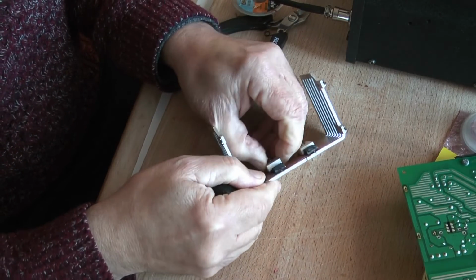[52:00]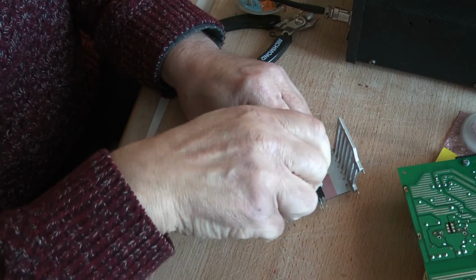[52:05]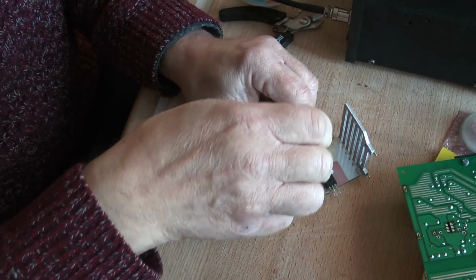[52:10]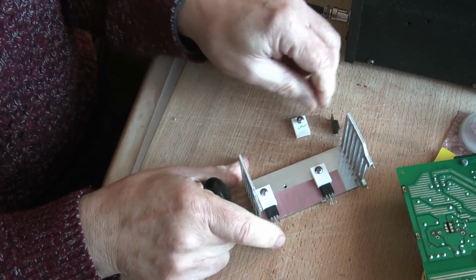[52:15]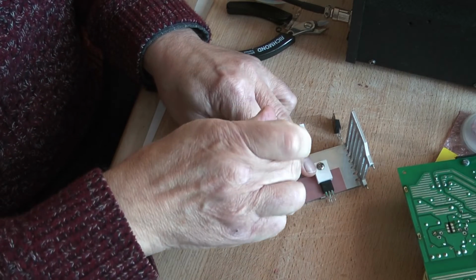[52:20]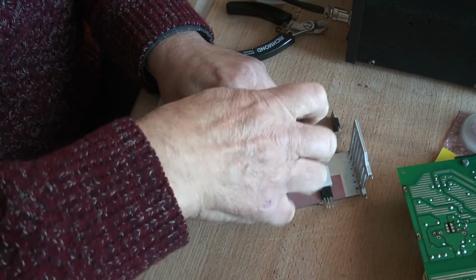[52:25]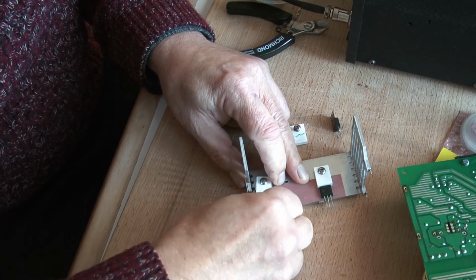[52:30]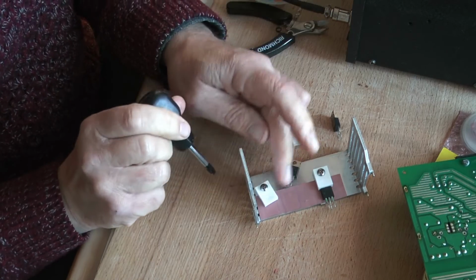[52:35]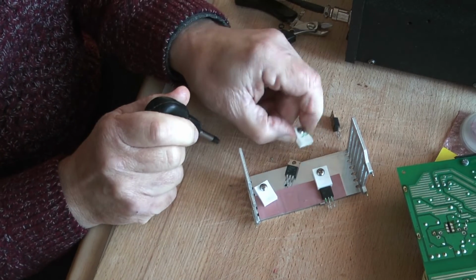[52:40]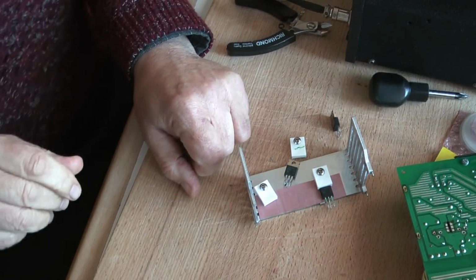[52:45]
We need to replace these two MOSFETs, and they've sort of pinched into location, I think. Let's undo that. Okay, take it right out. Well, that's strange. There we go. And the next one. Both of them are gone. I've never seen them fitted in this way, and I think it's a nice way of, oh I see, it's the little pin on the back there that's isolating it and making it difficult. Right. But I quite like the idea.
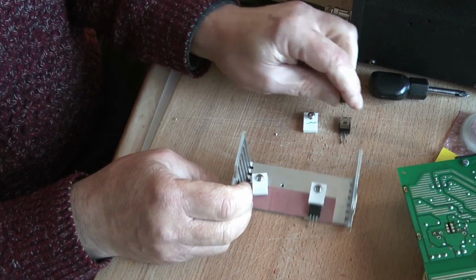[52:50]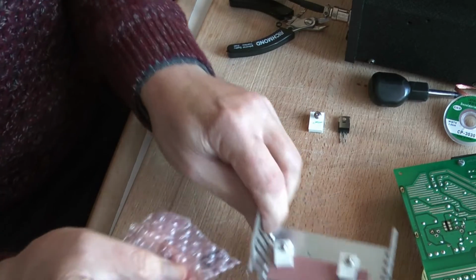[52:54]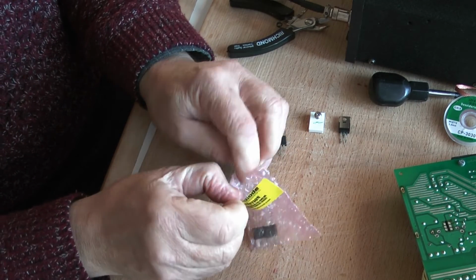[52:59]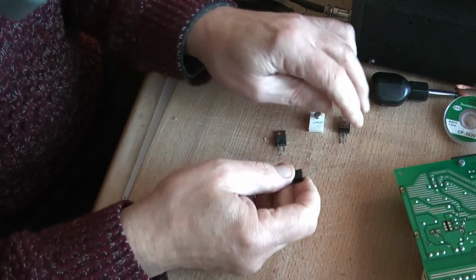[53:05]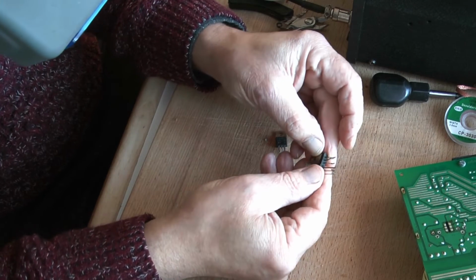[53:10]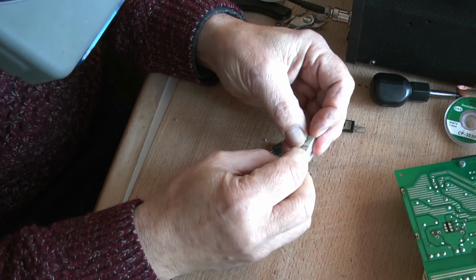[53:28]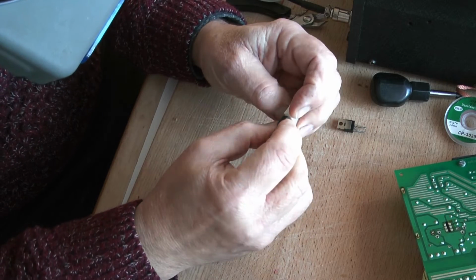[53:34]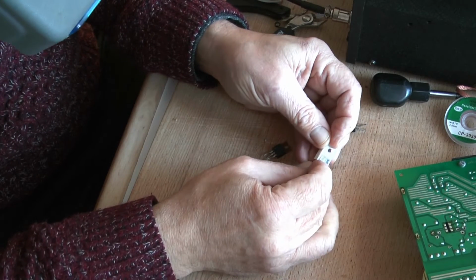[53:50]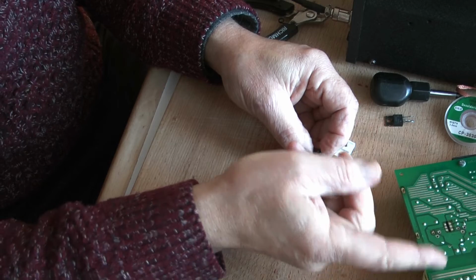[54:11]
The new ones, let's get one out. It would be wise, let's just check that they sit on there okay. Yeah, not quite as nice as you would hope. Why is that? Oh, I see. That's cleverly done. It's on an angle there to make sure that when you tighten up you are really clamping onto that. That's clever. We need to bend the leads to match as exactly as possible the, oh god, that one's gone already. Try this one. To match the prongs so that they locate a little bit easier in the holes when we come to put it back.
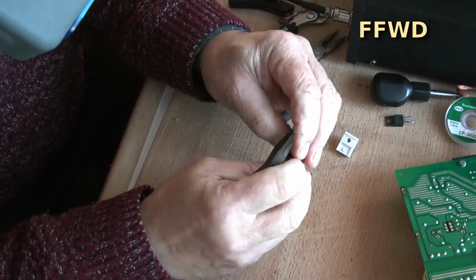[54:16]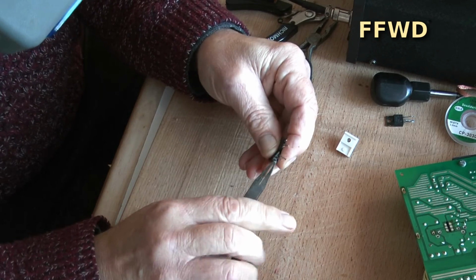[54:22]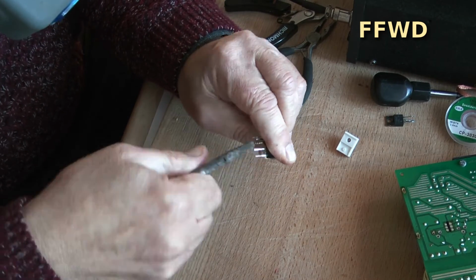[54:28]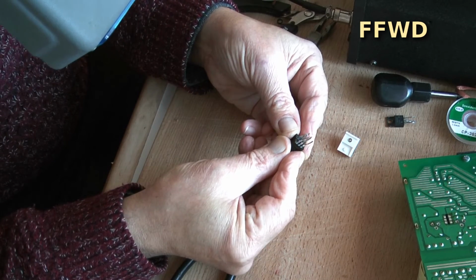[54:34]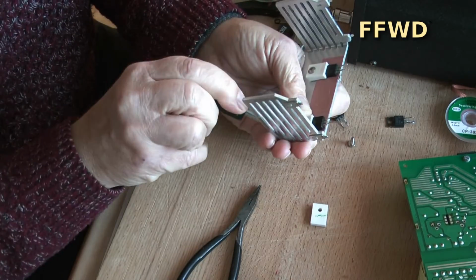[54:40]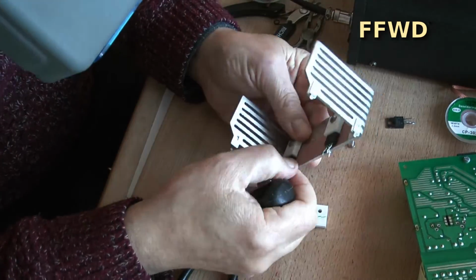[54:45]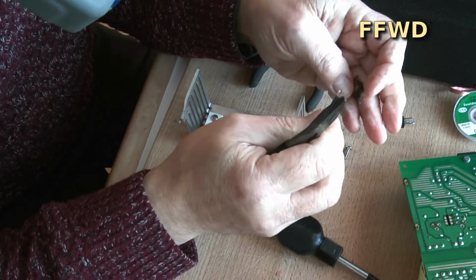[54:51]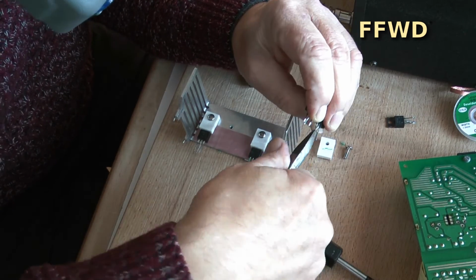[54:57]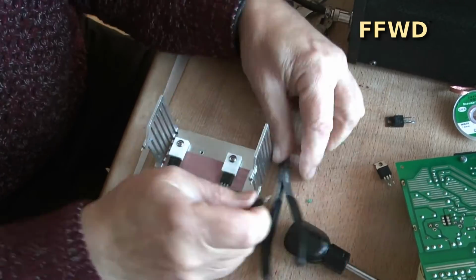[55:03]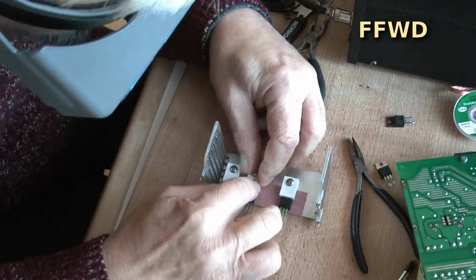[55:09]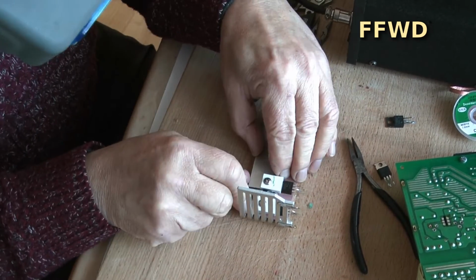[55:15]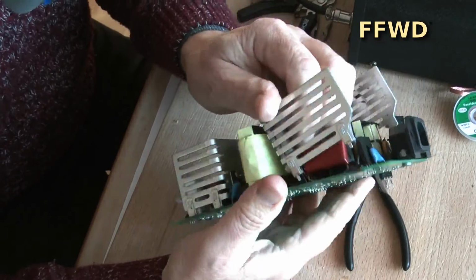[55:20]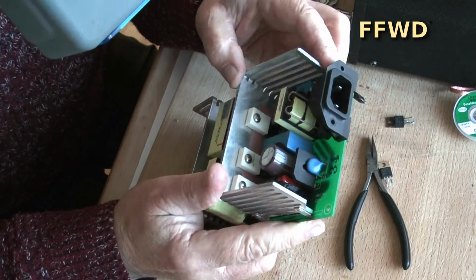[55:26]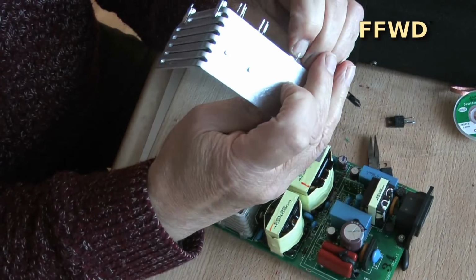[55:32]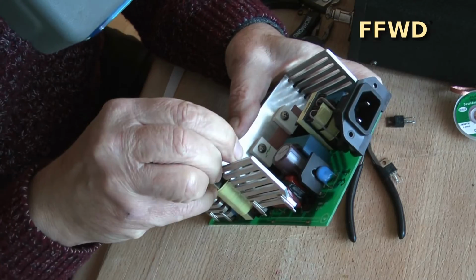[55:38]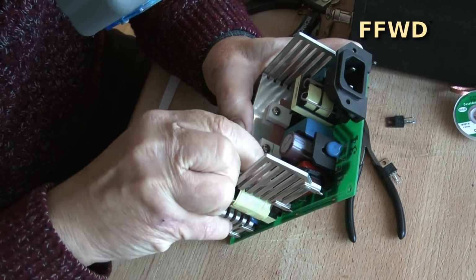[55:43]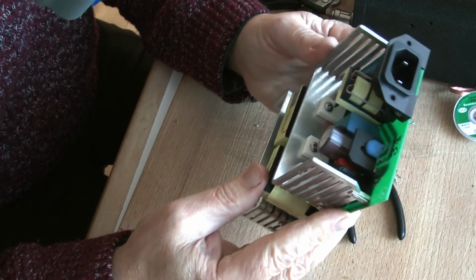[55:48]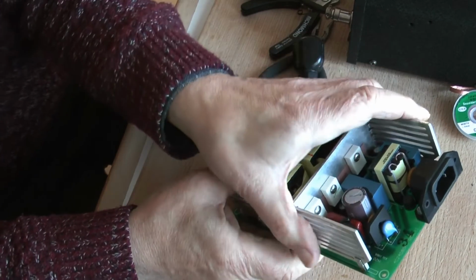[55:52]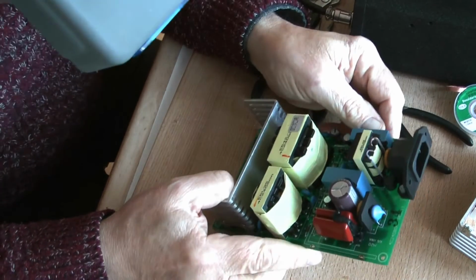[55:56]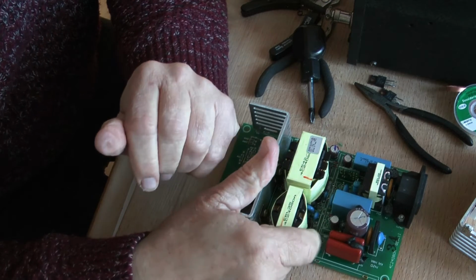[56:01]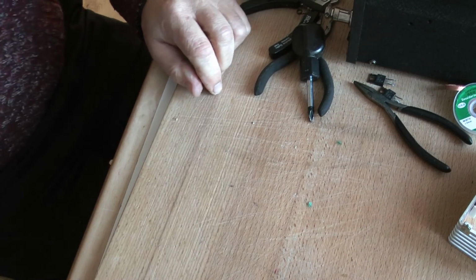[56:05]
Well, that all fits nicely, so we can now take that out and proceed with what we were going to do. There's a little board that fits in there, and I'm going to talk about that for a couple of minutes. So let's move that out of the way.
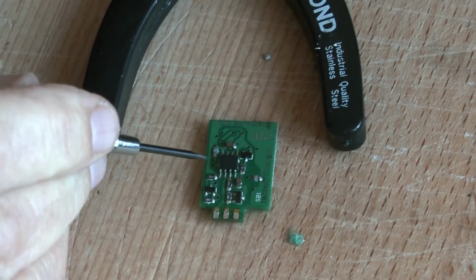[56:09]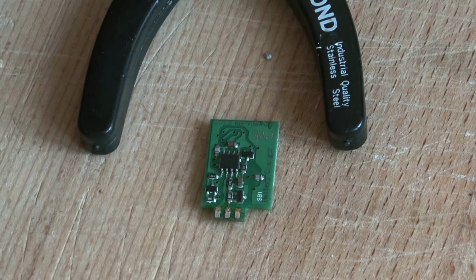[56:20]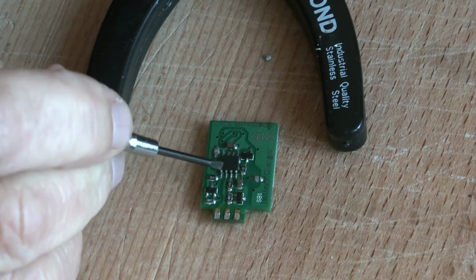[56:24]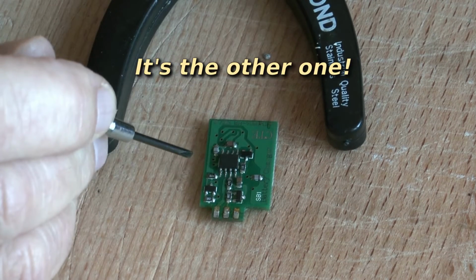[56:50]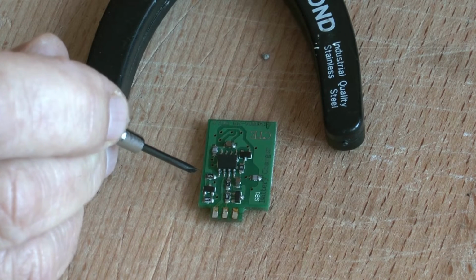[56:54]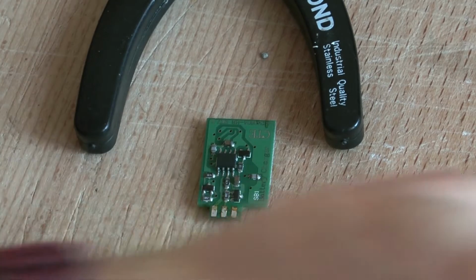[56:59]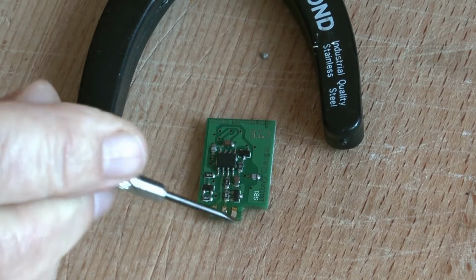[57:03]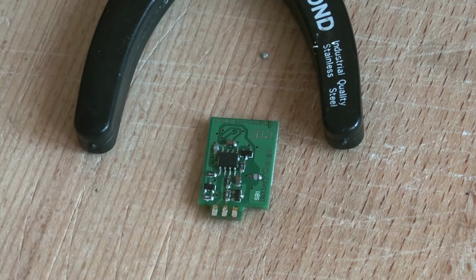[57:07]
This little chip drives the two MOSFETs that we've just replaced, and it switches them both on and off simultaneously. Now I checked the outputs of this chip, and they don't seem damaged. From the MOSFET drive of this chip, they go through two little networks, this one here, and I think that one over there, that do some sort of voltage protection between the gate of the MOSFET on the board and the MOSFET drivers on this little chip, and all seems well.
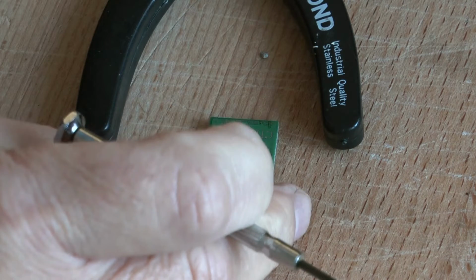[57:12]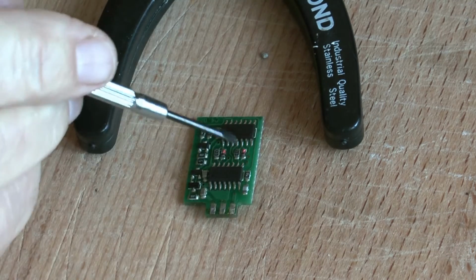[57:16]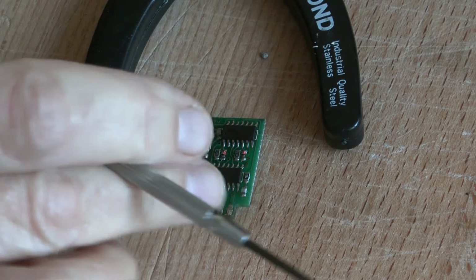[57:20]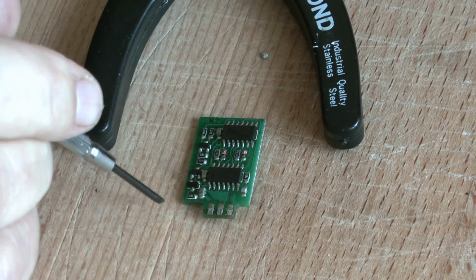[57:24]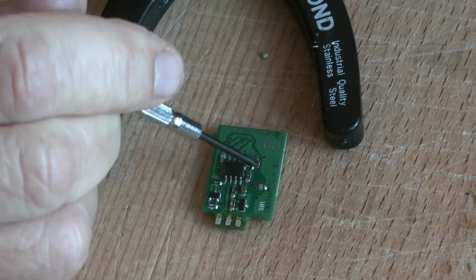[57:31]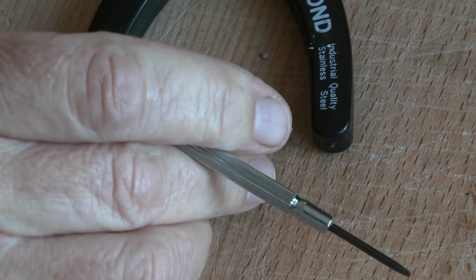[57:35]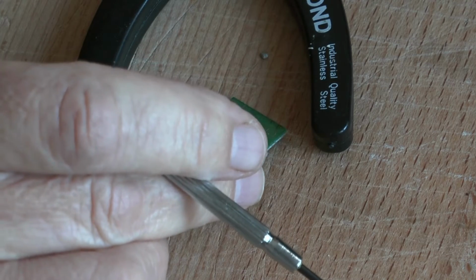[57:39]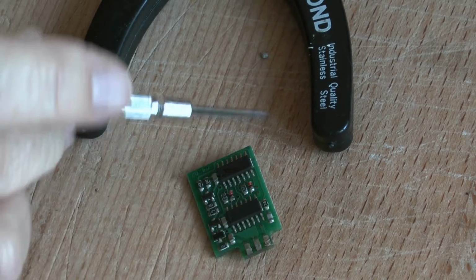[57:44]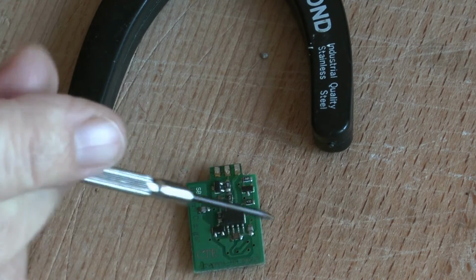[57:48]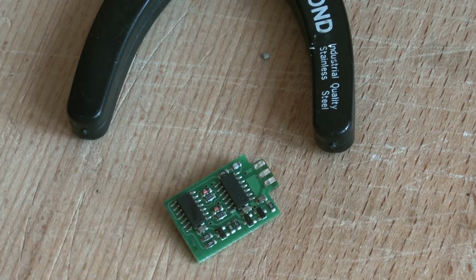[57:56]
The problem is I don't really know how the two chips are functioning on this side of the board, and all the components that are around, the diodes, the Zener diodes, the small transistors. We've got one or two on the board, they're transistors I believe, or perhaps they're Zeners. Well, let me put it to you this way, I'm satisfied that none of these components are blown, but I don't know entirely whether this is okay and whether these two components are okay.
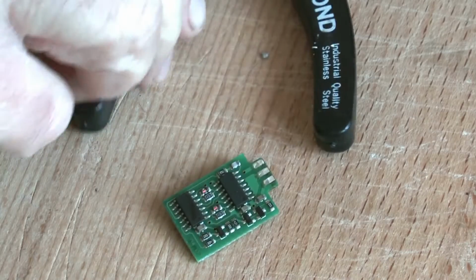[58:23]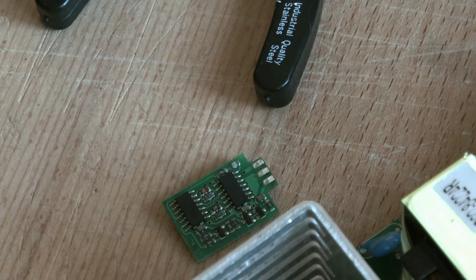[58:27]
So I've got a bit of an ego, and I'm quite prepared to try soldering it all up now and giving it a go. I've not found any components faulty other than the two components I've just changed, with one exception, and it is sort of niggling me, so soon back out.
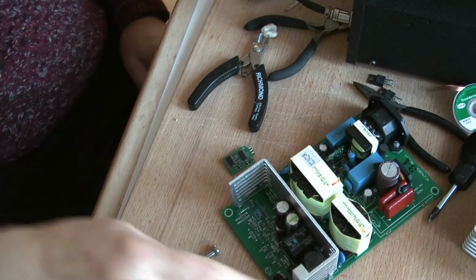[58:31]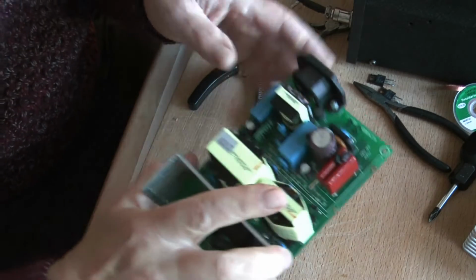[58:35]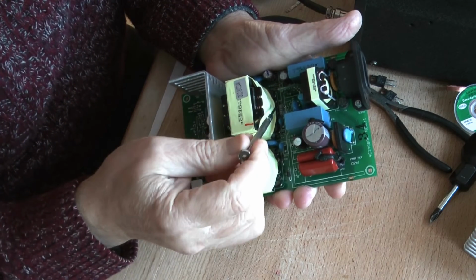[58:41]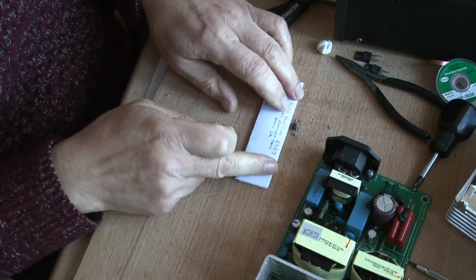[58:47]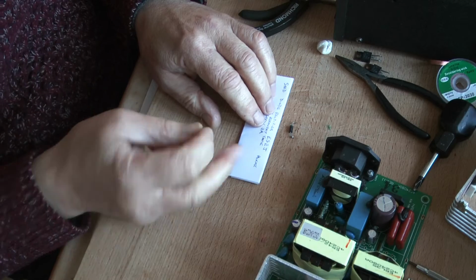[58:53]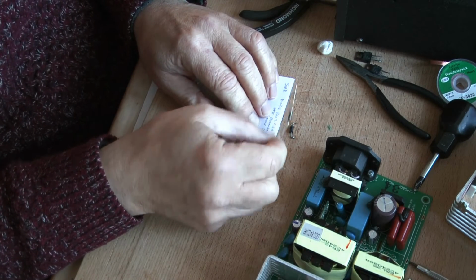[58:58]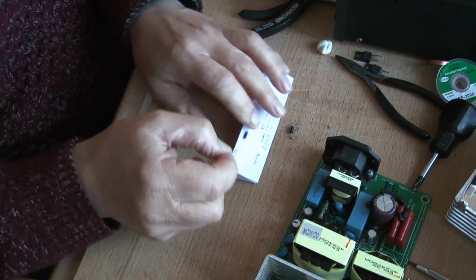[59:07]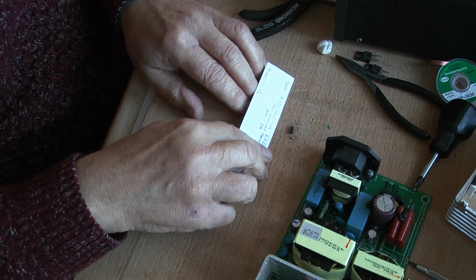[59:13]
Hopefully we can see inside here. There's a diode that goes across there. It's the one we removed earlier. Although this tested okay, I've just got a gut feeling that I want to replace it, and I managed to get replacement diodes for it. But again, they're new old stock, and I just got a gut feeling that this is the trouble. I don't know why. I'm probably way off beam, but you've got to go with your instinct in these things.
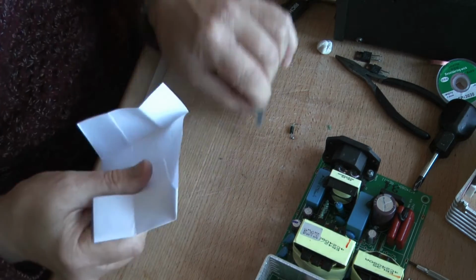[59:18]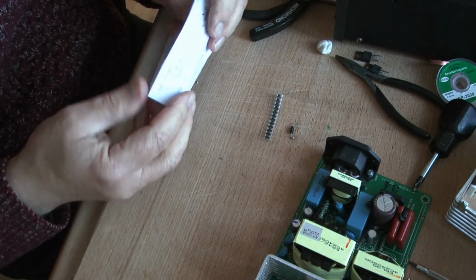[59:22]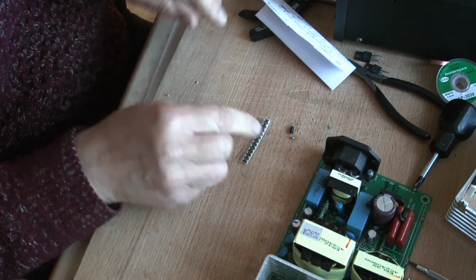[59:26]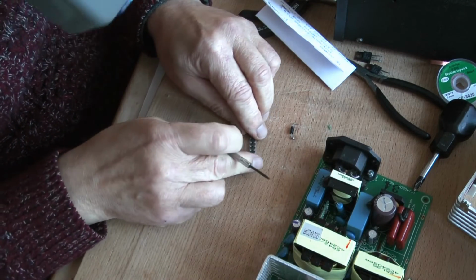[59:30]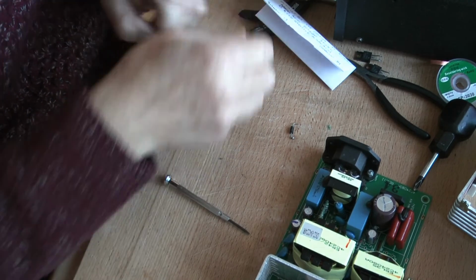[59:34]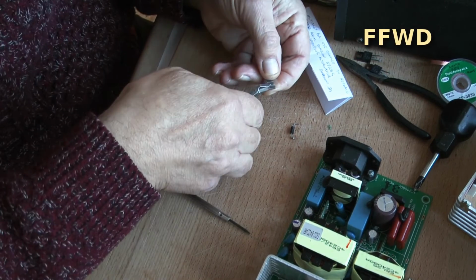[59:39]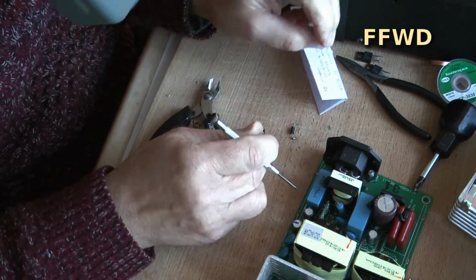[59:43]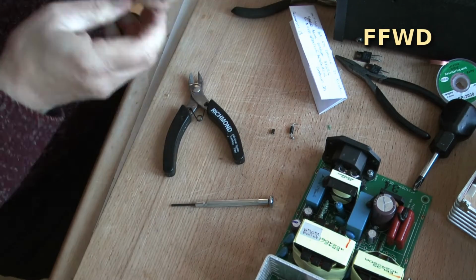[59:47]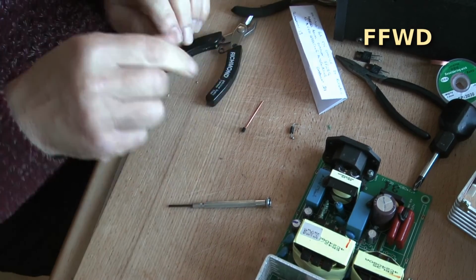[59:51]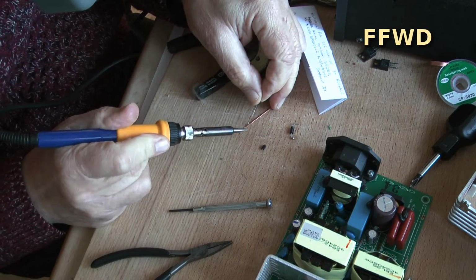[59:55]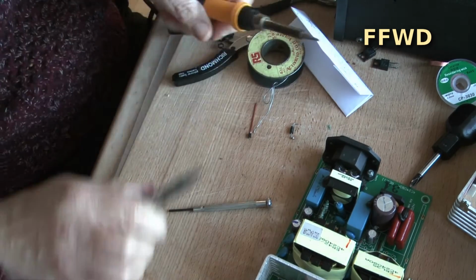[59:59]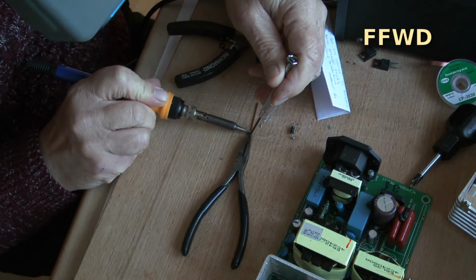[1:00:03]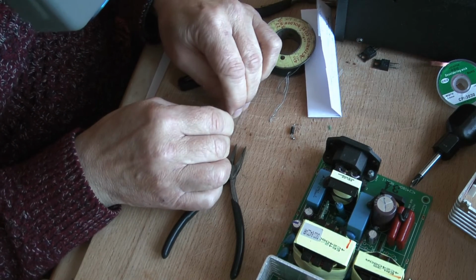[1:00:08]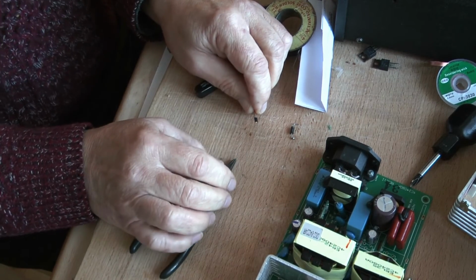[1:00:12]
And I'm changing it for one of these little things, which are basically speaking the equivalent of that, but an SMD device. And we need to get one out of its packing. Here we go. I'll come back when I've finished that, because it'll just be hours of silence.
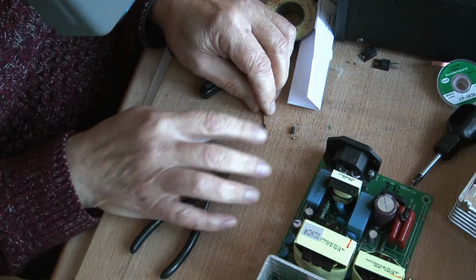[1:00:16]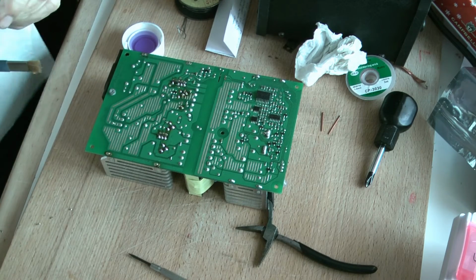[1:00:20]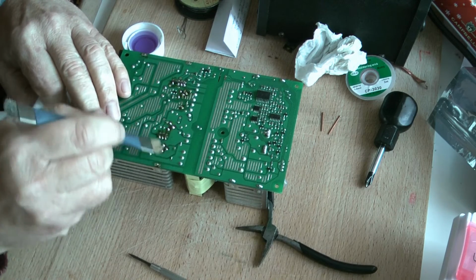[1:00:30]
Unfortunately, the memory ran out in the video camera while I was soldering this lot back in, and there's nothing to see. But it's only soldering. Now I'm just going to clean up the board.
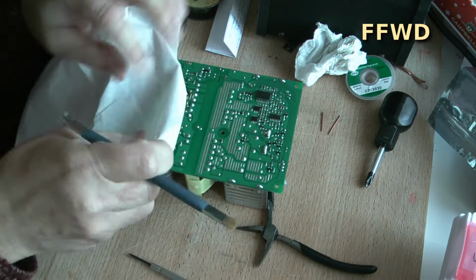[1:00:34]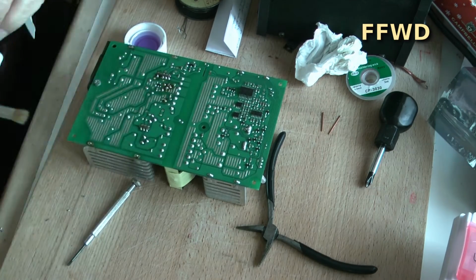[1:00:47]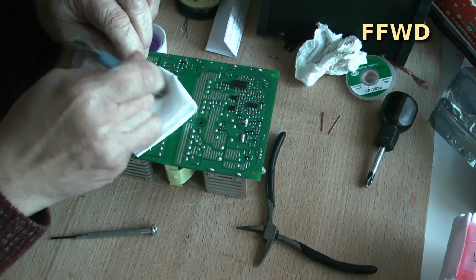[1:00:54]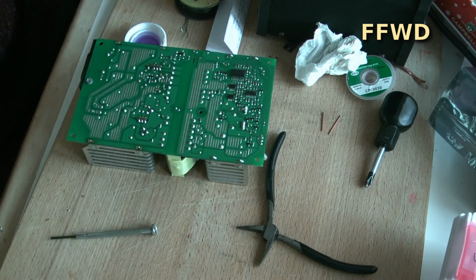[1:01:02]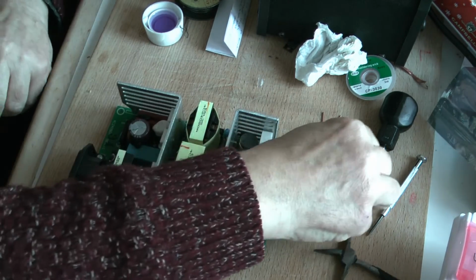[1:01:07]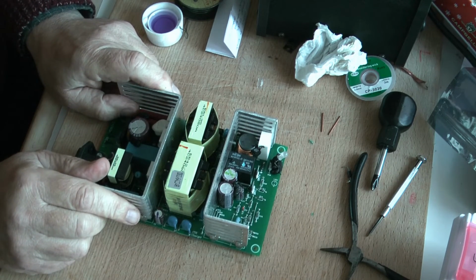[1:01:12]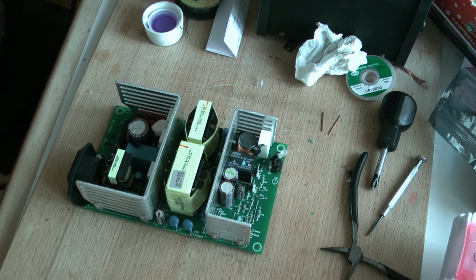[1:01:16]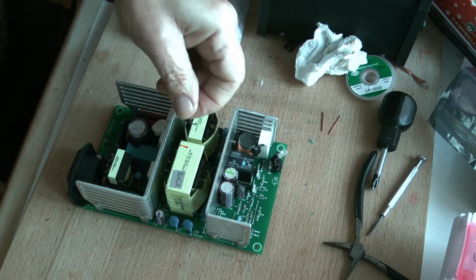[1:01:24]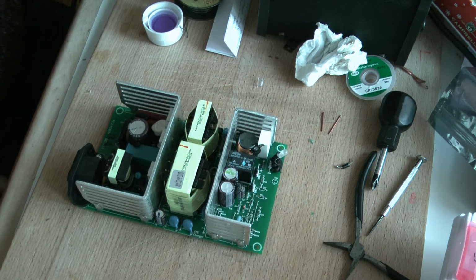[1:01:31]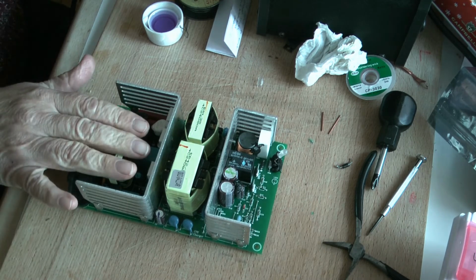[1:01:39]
I'm itching to find out whether this works or not. MOSFETs, in my opinion, don't just blow, they blow because something causes them to blow. And what that was, I really haven't discovered. I've changed this little diode out, which had gone on the other board but hadn't gone on this one. I've tested all the components, everything that I can test in this area, and I can find nothing wrong.
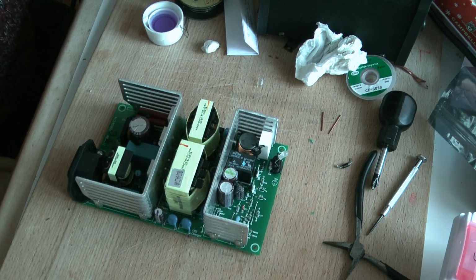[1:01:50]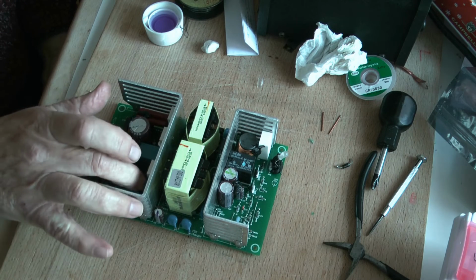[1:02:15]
On the small piggyback boards that are in there, let's take that out, it's not possible to work out whether the integrated circuits on those boards are fully functional or not, and they may be the culprit for the fault. If so, this is going to blow up again and it's going to be a little bit costly for me. And if that happens, then I will have to buy the integrated circuits for these little piggyback boards and try them out.
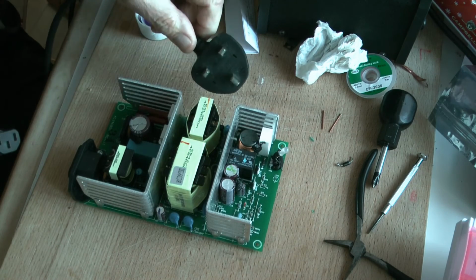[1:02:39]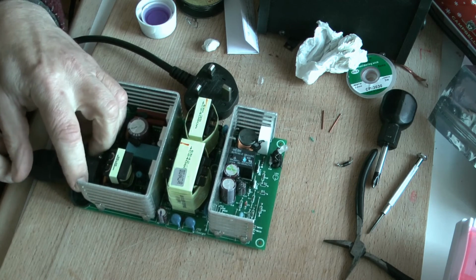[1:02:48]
Now, why am I going to do that? It's because I want to really identify the fault. Just a bit of personal pride really, more than anything. But it may work, it may not, I don't know. Once I've plugged it in, we'll find out whether it does work. This is the other end of the power lead, so I've not got that plugged in because I don't want to go touching this once I power it up. I get this horrible feeling it's going to blow up on me.
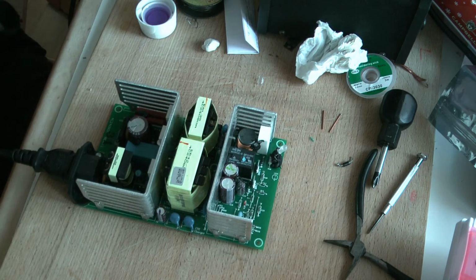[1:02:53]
Right, we're all plugged in. And here we go for the moment of truth. If it works, the green light will flash. If it doesn't, it might go bang. If it doesn't flash, it just goes bang without going flash.
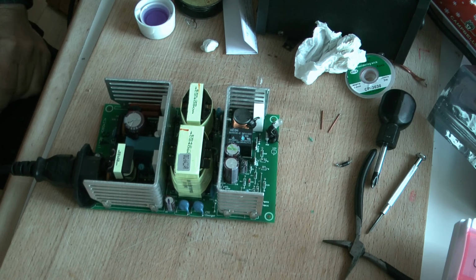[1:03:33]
Right, well, green light's flashing. That's about how long it flashed before it blew up before. We've gone past that. I want to stick my fingers in and feel for warmth, but don't, because it'll end up killing me. It's very, very dangerous at this stage, so for goodness sake, keep one's hands away. Don't go prodding anything, otherwise you will end up brown bread.
So I really want to test this out thoroughly before we plug it back into any electric wheelchair, because that was terribly expensive. I don't want to go damaging that in any way, but we're moving forward, which is a good thing.